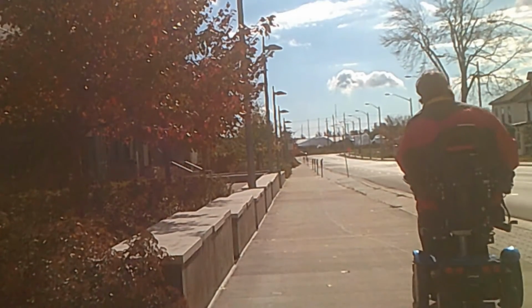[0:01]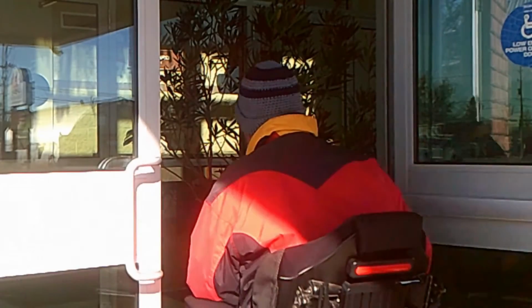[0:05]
Hi everyone. What I have to share with you today is how I made a bearing puller to free bearings from my power wheelchair. I'm sure there's other applications that you could use this on, like a scooter and maybe a lawnmower. Anyway, I encourage you to get creative. That's part of the fun in doing these things.
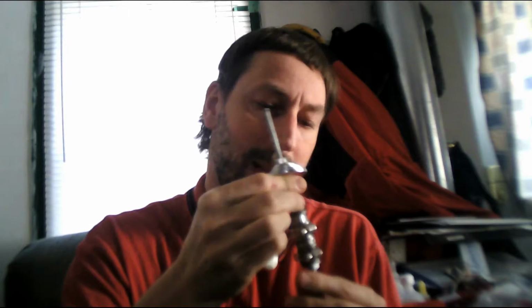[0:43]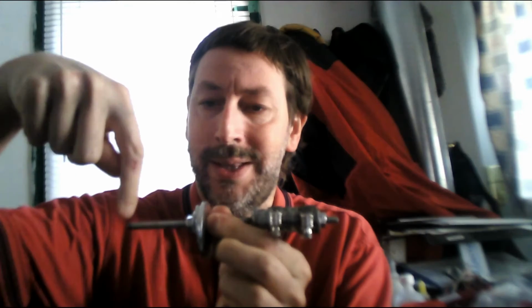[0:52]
So to start with, this is my bearing puller. And I want to go over what the materials are that I used to create it. So to start with, this right here is 1/4-inch threaded rod. I chose 1/4-inch because it would go through this cement anchor and allow the cement anchor to close all the way around and form an O.
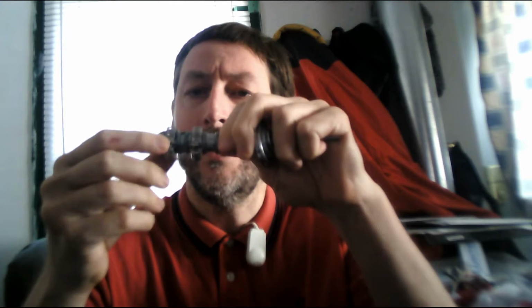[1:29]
At the end, I've got a 1/4-inch nut. I've got a 1/4-inch washer in behind it. And then I've got the cement anchor. These two are pipe clamps. And then I've got them encased in this steel stick. So this is an epoxy. I did this to make these pipe clamps strong so it would resist the bearing being removed, because otherwise the cement anchor was opening up like this.
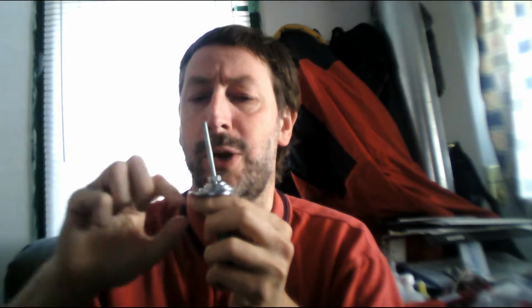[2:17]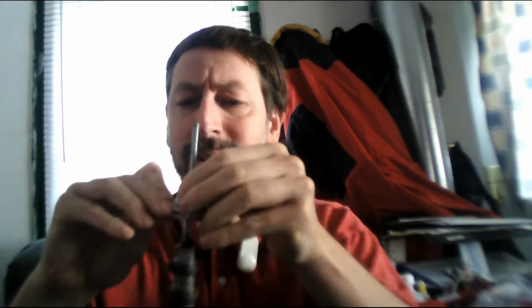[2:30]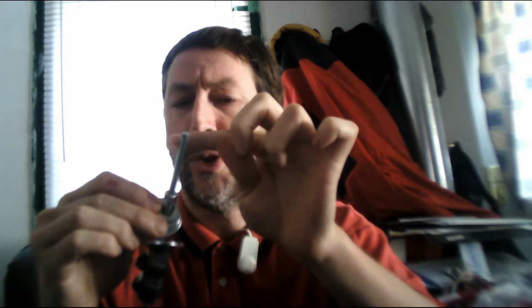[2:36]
Then at the top are just a few washers. This particular washer is really crucial. It's about a 1/4-inch wider in diameter than where the bearing goes in my wheelchair. So my bearing puller uses the strength of the metal of the wheelchair to free the bearing. And it goes through this washer right here. Then why I've got these three washers here is because of using a 1/4-inch threaded rod. This is a 1/4-inch nut. And if I didn't have these three washers, the 1/4-inch nut would have just gone right through the hole right here.
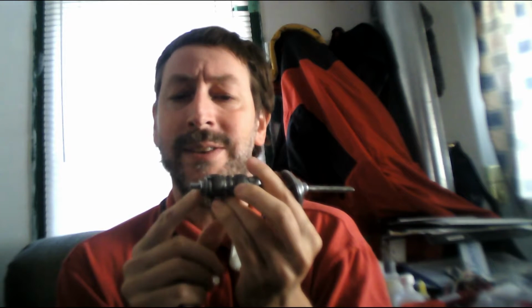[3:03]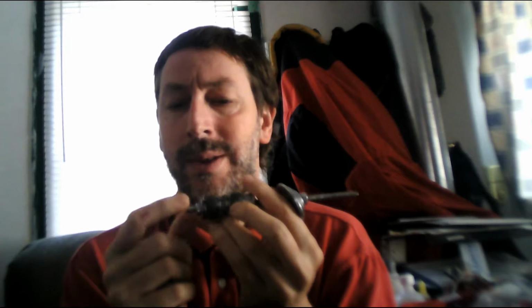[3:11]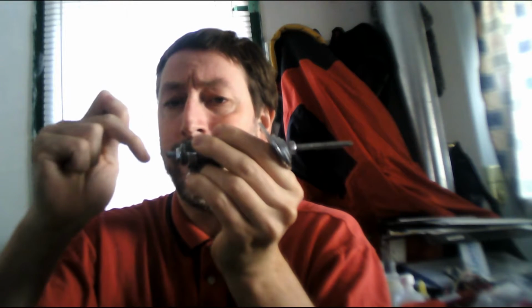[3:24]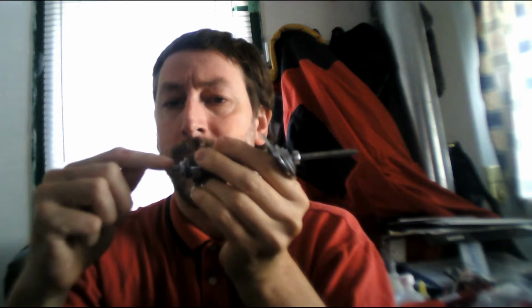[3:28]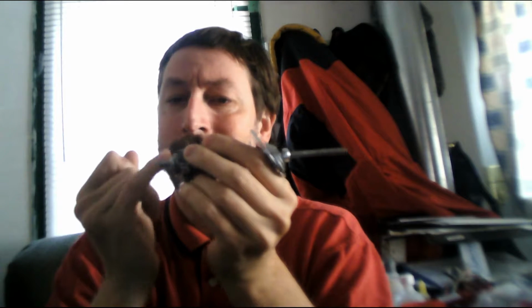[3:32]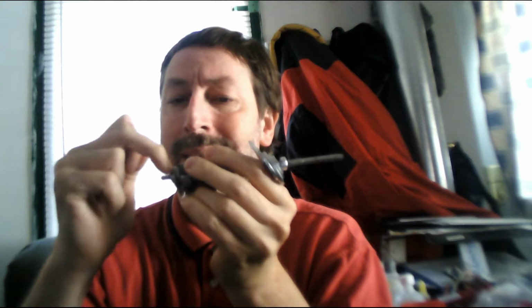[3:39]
The process of assembling this was really straightforward. I put some of this SteelStik about 1/2 inch or 1 centimeter in at the bottom, and then wrapped a 1/4-inch nut into it, and then squeezed what came out that end into the washer around the end. Then I cleaned off with a Q-tip that you use for your ears the extra that came out on this side here. I wanted to keep these threads clean. And I also cleaned off what came around the edge of this bolt as best as I could.
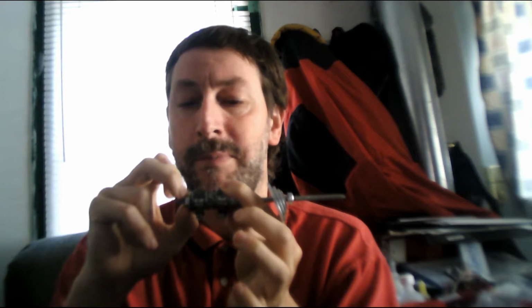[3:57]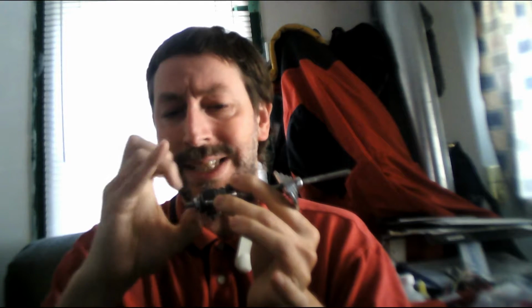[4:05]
The reason I did that is to keep this nut as an anchor while the bearing is being pulled. And that's really important for my design. I'm not saying it's the only way to make one of these, but that's what I did for my specific design. Then I've got this washer here epoxied into the cement anchor.
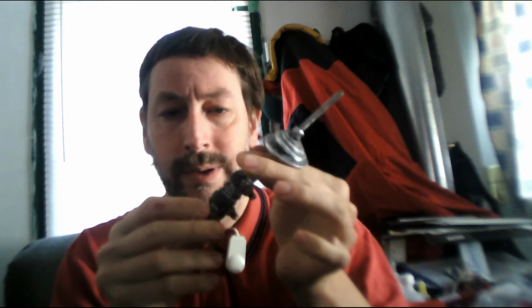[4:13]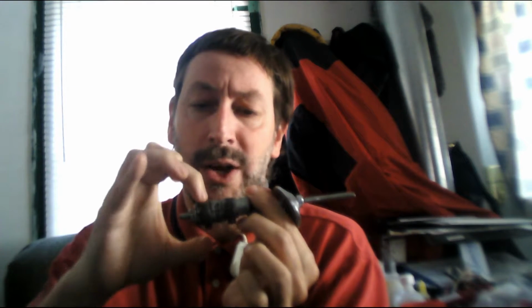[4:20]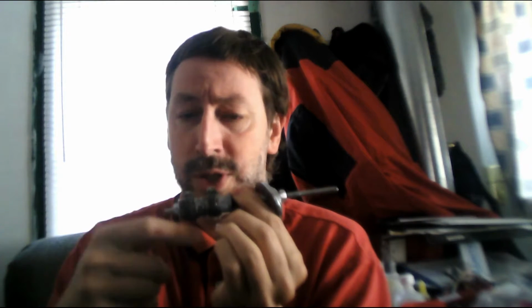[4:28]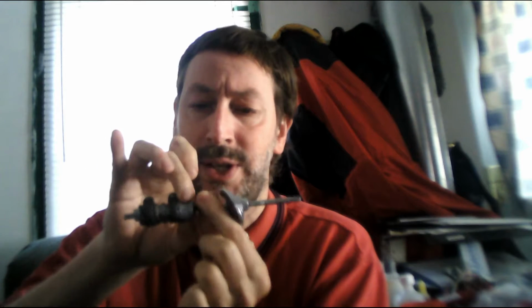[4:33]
After that, I put another, like an O shape of the steel stick underneath the pipe, the two pipe clamps, and then tighten them. And then I put the steel stick over top of it just to keep it as strong as possible, because the cement anchor is going to take the stress of my design on freeing the bearing.
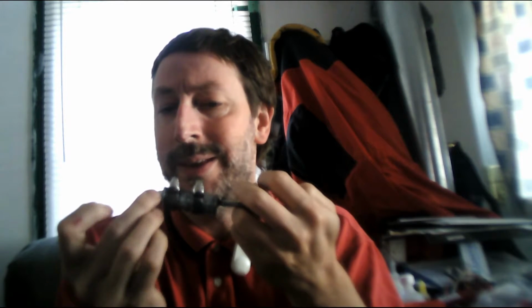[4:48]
This takes an hour to cure, so I took an hour break after I had the nut, washer and the cement anchor in place. Then through the little hole that was remaining right in here, I filled it with more of the stick weld, and then I made it smooth on top for when it was being used to free a bearing. And again, I let it sit for an hour.
And then finally, putting these top washers on, just drop, drop, drop, tighten with a nut. And this is what you end up with. The cost of it was about $25. It was $12 for the JB steel stick. You may have your own preference in epoxy, and I completely respect this.
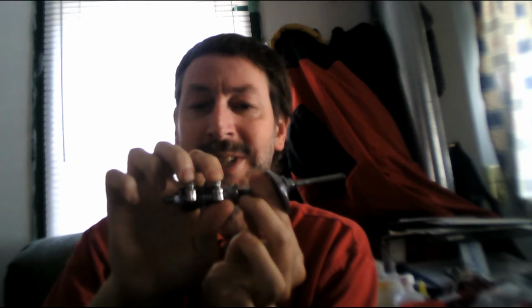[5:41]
These two pipe clamps were about $2.50. The anchor was about $3. Threaded rod came in a 3-foot length, and it was around $3. And then these washers on here and the nuts range from about 15 cents to about 50 cents, the most expensive.
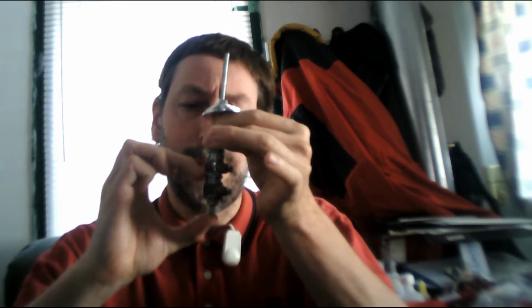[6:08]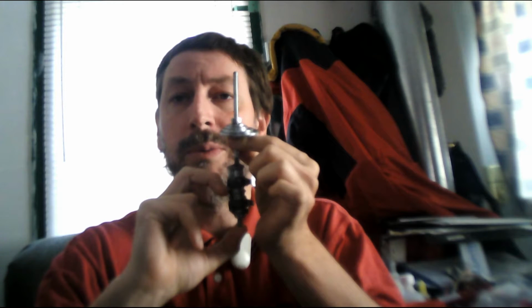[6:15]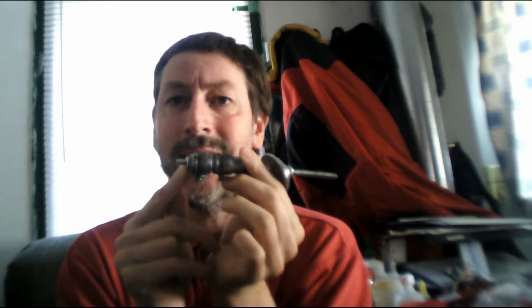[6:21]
How I decided on where to cut the threaded rod was I needed to keep about this much of the bearing puller below the wheelchair when it started off in use, so that I could always access this nut with my wrench.
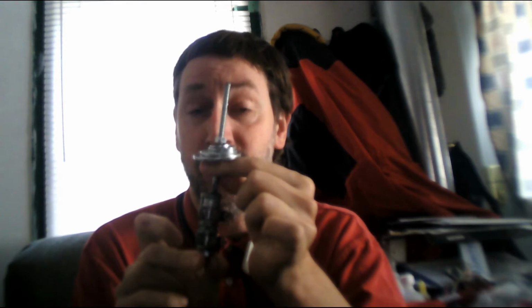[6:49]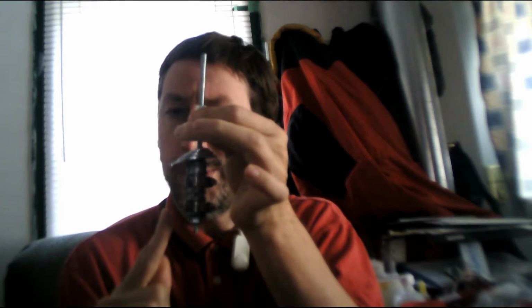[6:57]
How this is actually used is the large washer sits on the frame of the wheelchair above the bearing where it's going to be pulled, and this here is put underneath. And then one wrench keeps supporting this, and it's tight in place because of the steel weld's strength. And then all you're doing is tightening the nut at the top. So as you do it, this is slowly going up. And then you'll eventually have it start swaying and the bearings come free that you're trying to remove.
A few key important notes. I had to use something called penetrating fluid to free the bearing. It was in there real good and needed it around the edge to get it free from the wheelchair. This is because of how much outdoor driving that I do.
There's lots of thoughts out there on what is the best penetrating fluid. I used Liquid Wrench. It worked fine, but I see no point in debating with you what your personal preference is or the advice you might seek from a mechanic on what's available to you in your country.
Part of why I did it this way is it avoids having to take the part off the wheelchair. This was able to slip underneath, and then the washers just dropped on top with the quarter inch nut being tightened. Why that's important is it kind of crosses the line of if I can do it myself or if I have to ask someone to take my wheelchair apart for me.
I want to do as much as possible for myself, so transferring to where I can sit and doing this, it does greatly limit what else I can do in the day, but in balance of that is I've done something and it's helped me, and it's a project that's completed and I feel good about doing it. So it's a trade-off.
You know, you could make a bearing puller and then have a friend do the actual work for you. It's a reasonable idea. Certainly making this for, you know, $25 is a whole lot cheaper than having a mechanic or a mobility specialist do the repair and paying an hourly rate and travel time to your wheelchair or home to pull the bearing themselves and seat the new bearing.
Why I've made this is just to encourage you to have the most independence that's possible for you. As I've said, if you do certain activities, you're not going to have energy for other activities. You have to decide what's right for you. Having the tool in my home means I could call a friend over, and it's not going to take too much knowledge or too much understanding to apply two wrenches and just be tightening them as the bearing puller's used. So to me, this is my mobility on my own timetable. And if I have a breakdown, this is peace of mind.